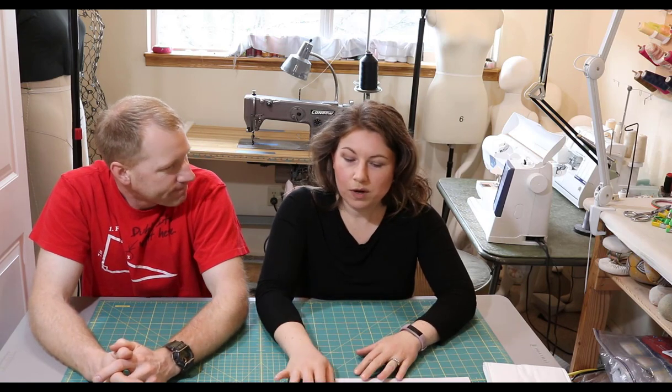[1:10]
Today we are going to work on a project where we make a dust mask or more. As you may know, currently there's a bit of a shortage and quite a demand for dust masks, maybe more than just a dust mask, the N95 or P100 type of mask. So whether you find yourself at home with a lot of extra time and you want to work on some cleaning or woodworking projects where a dust mask or a filtration mask would be good, or you happen to want to wear one out in public, we are going to show you our version of a mask made with rated filtration components.
Now keep in mind, this is at your own risk. There's no scientific testing behind this, but we're using components that should have good ratings. And you can use your discretion as to how you want to utilize these. At this point, I would say if you are using something with a filtration rating, it's going to be better than just a cotton knit t-shirt fabric. Yeah. But that's all we're saying, nothing else.
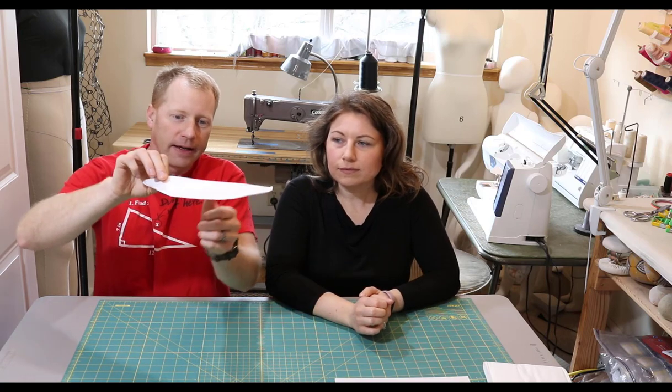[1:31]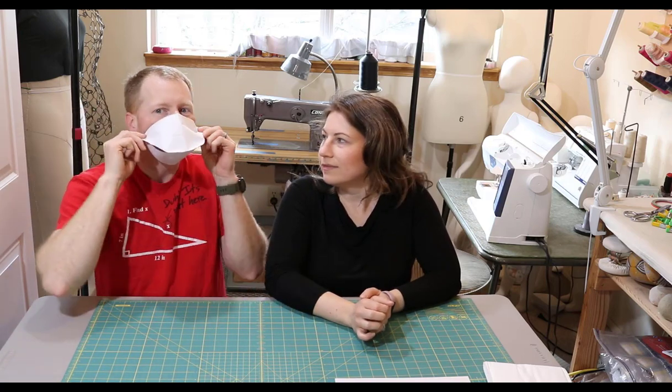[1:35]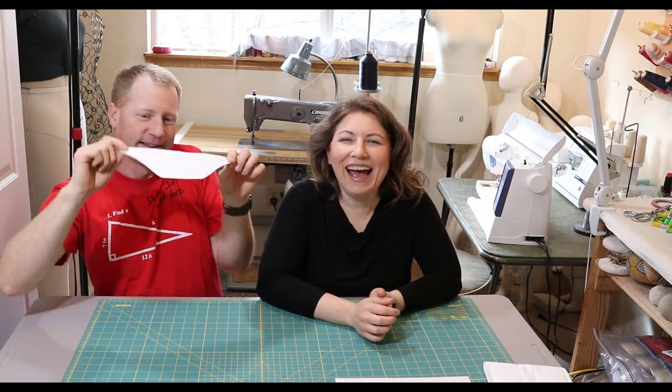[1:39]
Yep. This particular mask that we're doing is a duckbill style, so it lays flat, and then it opens up. We made a pattern out of paper, and it goes over your face like so. We're not going to be using that one when we make it, but that kind of gives you an idea of the style.
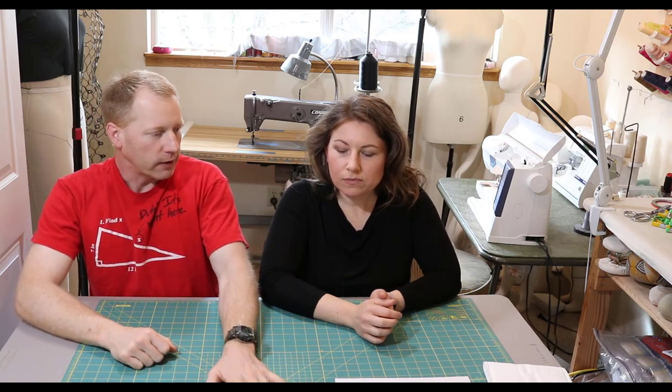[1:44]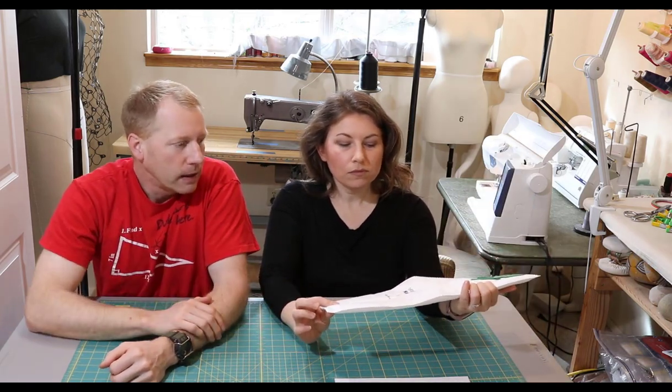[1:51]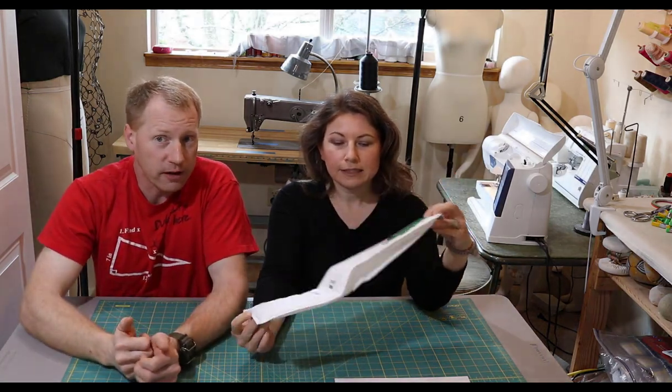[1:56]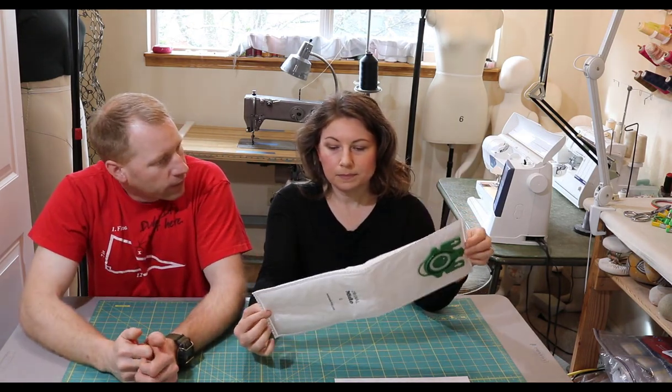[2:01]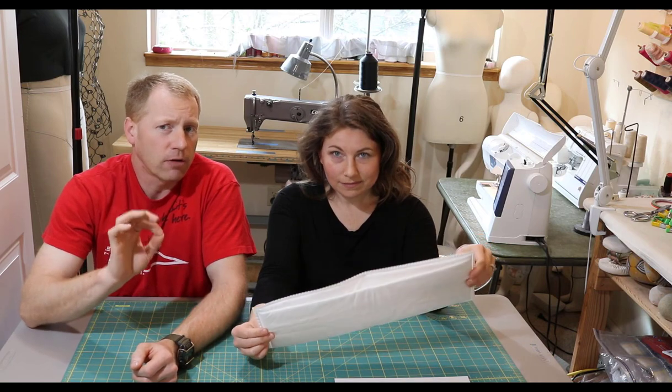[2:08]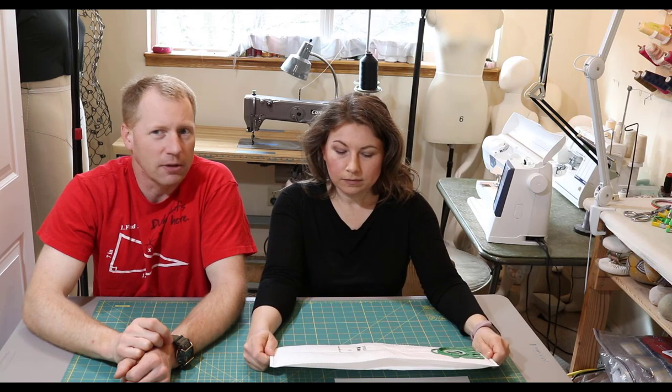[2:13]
We are going to actually use a vacuum cleaner bag, and these are HEPA rated. It's designed to keep particles from blowing out into your house when you use it as a vacuum cleaner, but it could also keep particles from going into your lungs when you breathe through it. These are rated at 99.9% dust particle containment. I couldn't find the actual micron size, but if it's a HEPA filter, it should be 99.97, I believe, is the rating. So that's the equivalent of a P100 mask that 3M puts out.
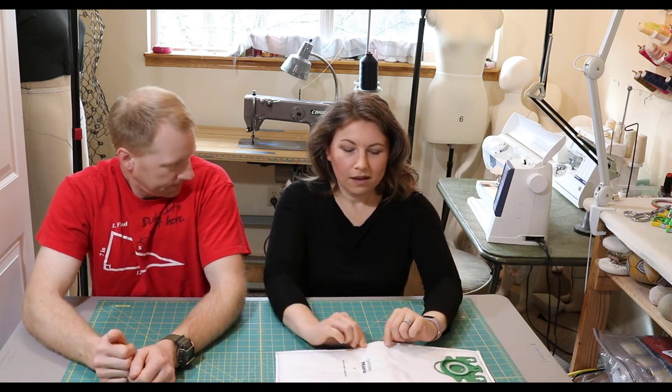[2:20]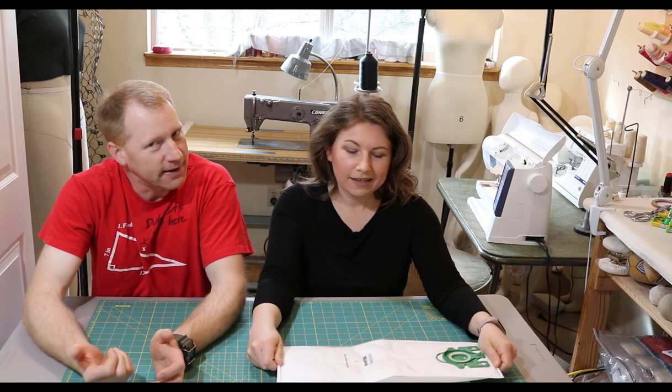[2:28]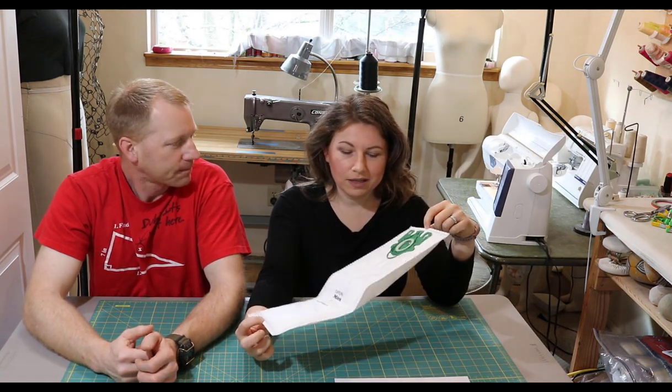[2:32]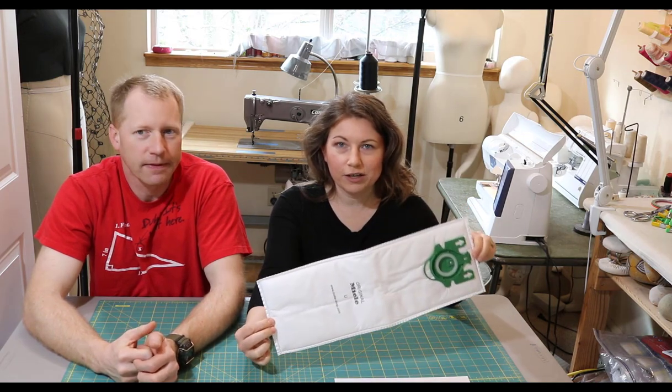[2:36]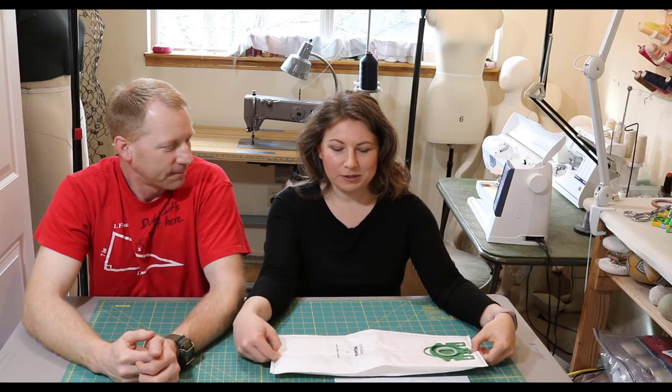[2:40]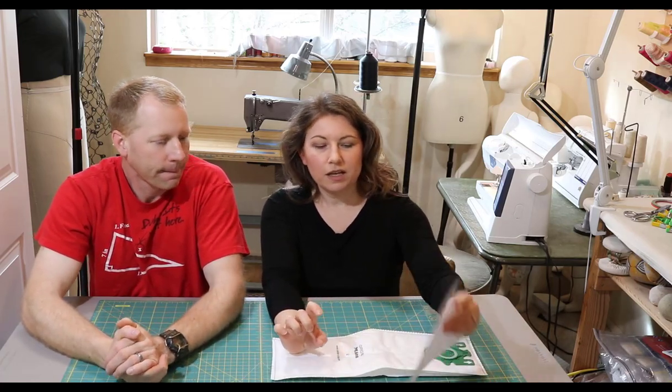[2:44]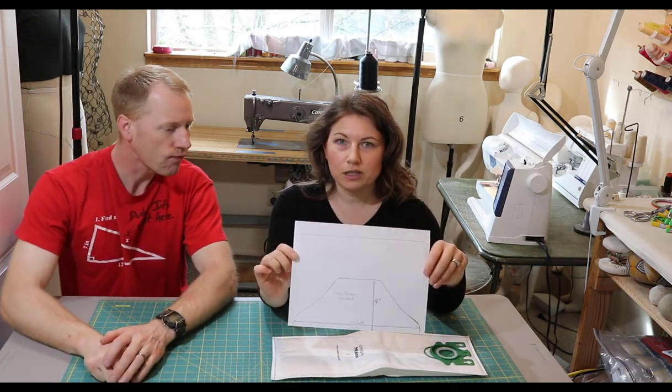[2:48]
And this is a, I'm going to pronounce it wrong, Miele? Yeah. So I believe this is a Miele HEPA filtration bag for cat and dog vacuum cleaners. So, allergy awareness there.
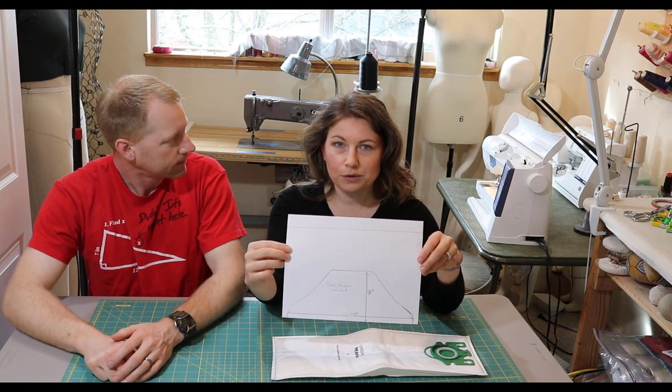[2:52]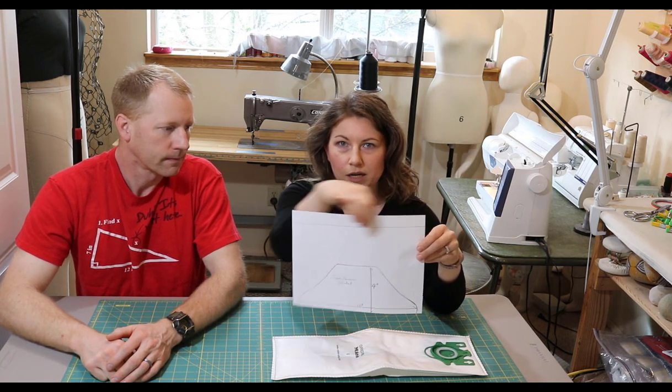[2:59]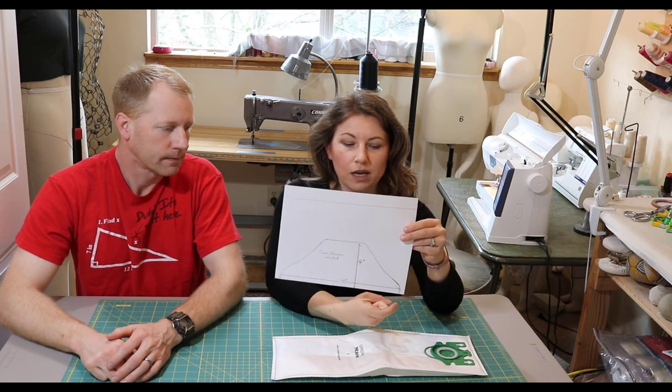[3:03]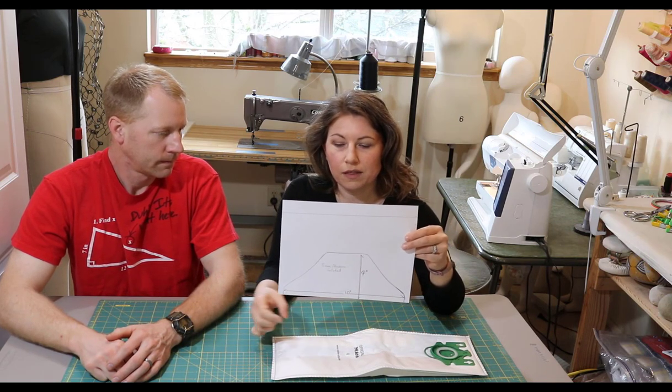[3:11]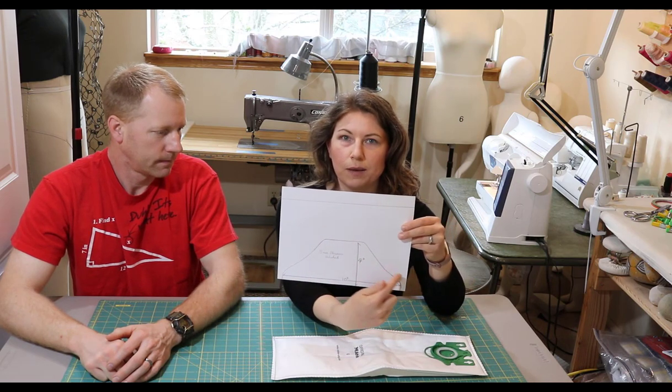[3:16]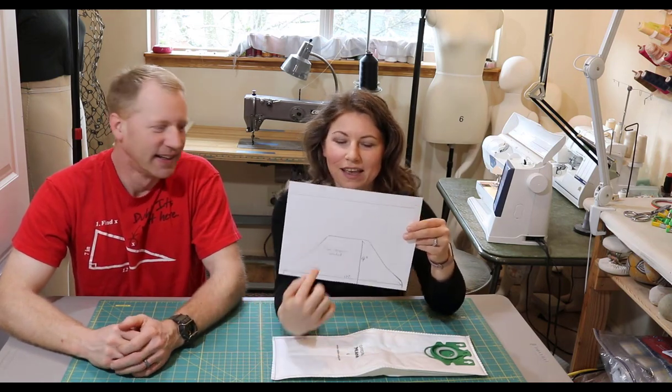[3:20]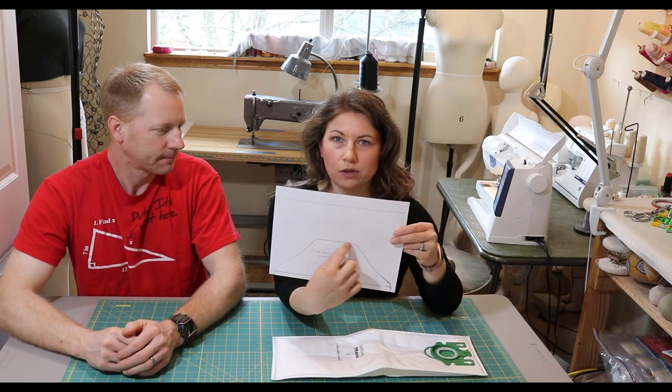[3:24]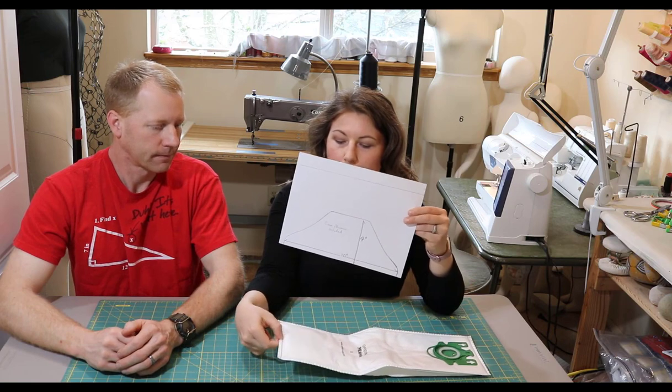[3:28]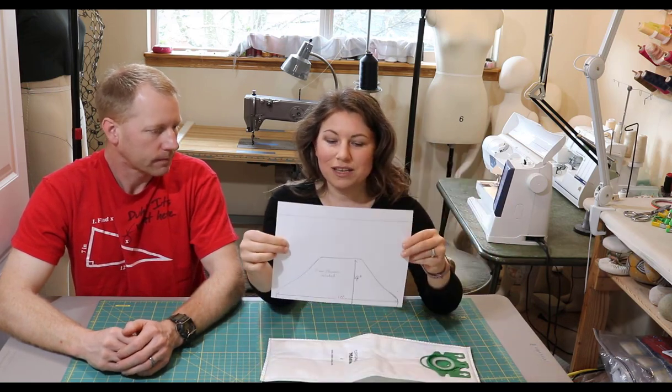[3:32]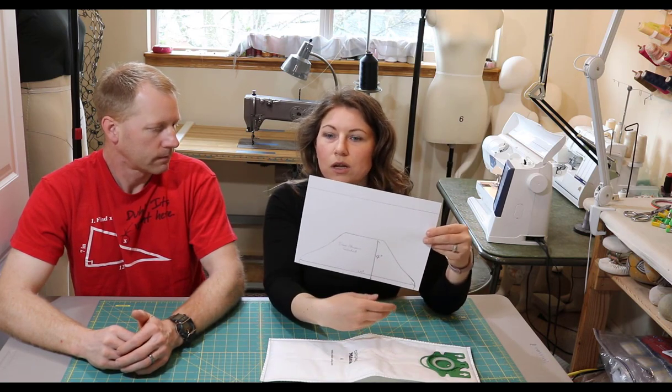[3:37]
And we have a pattern made from an 8.5 by 11 sheet of paper. So hopefully this makes it really easy for you to reproduce this shape. There's a 1-inch strip at the top. Just mark it. That's for your elastic. And then if you mark a little notch on either side of your paper at a 10-inch distance, one side to the other, and then 4 inches up, and then create this kind of shape, kind of like a mountain. The top is right at about 3 inches straight across, so that's where you will affix your heat-welded section. That just gives you an idea, and these include the seam allowance, so you shouldn't have to worry about that.
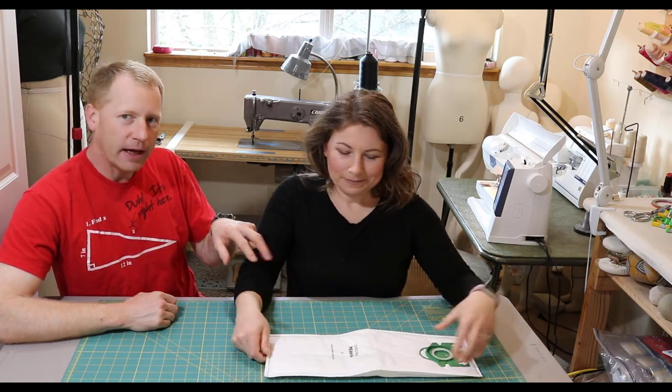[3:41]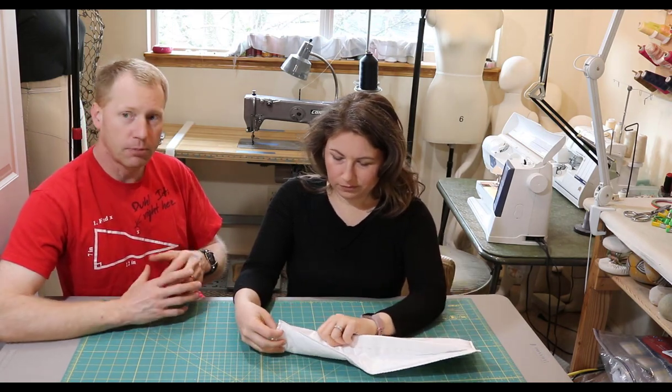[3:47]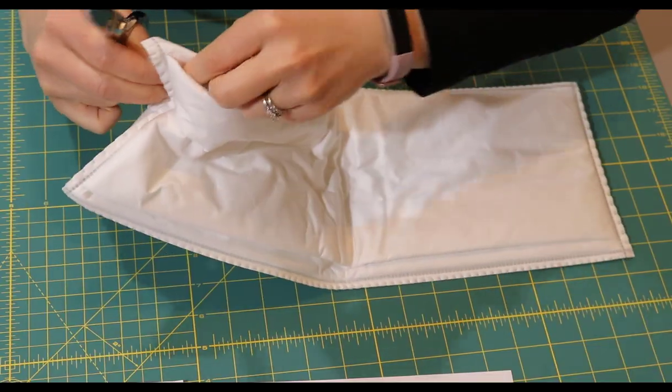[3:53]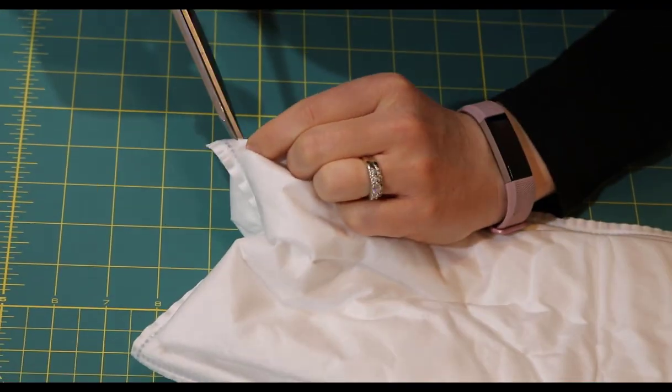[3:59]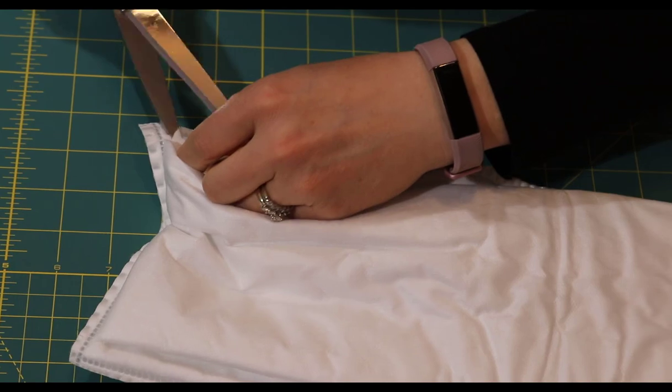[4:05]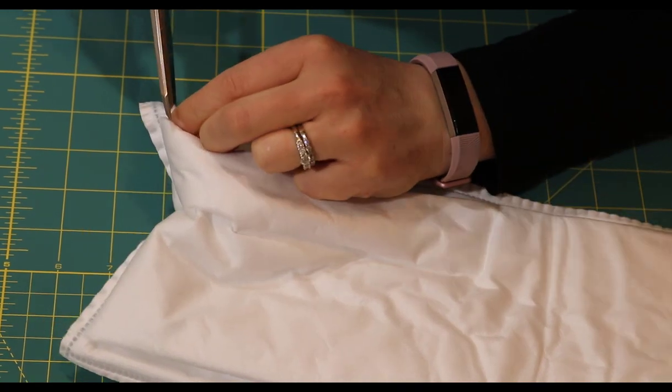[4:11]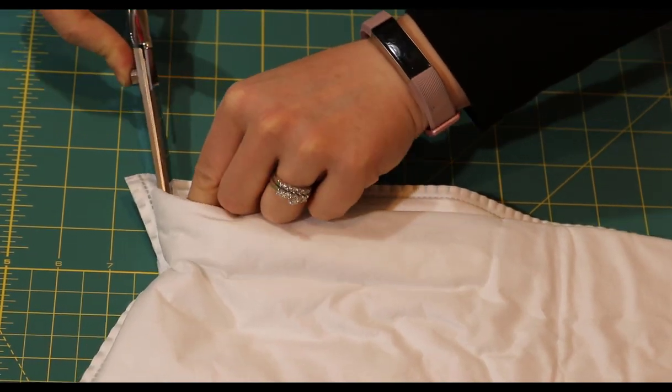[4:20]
So we'll dissect this bag. We'll utilize as much material as we can. Different bags, different manufacturers are going to be put together differently, so just keep that in mind as you chop it apart. I am separating the top and the bottom sections, putting a little snip here just to open it up, and then once I have made an incision into the bag, I'm going to carefully cut this pleat out.
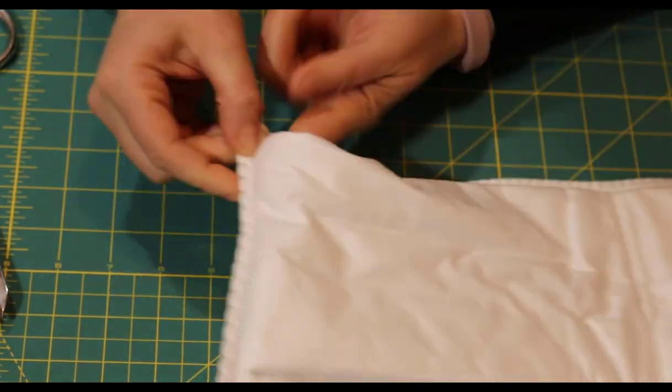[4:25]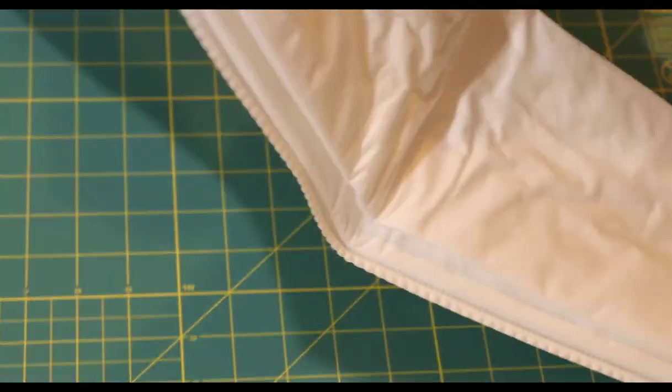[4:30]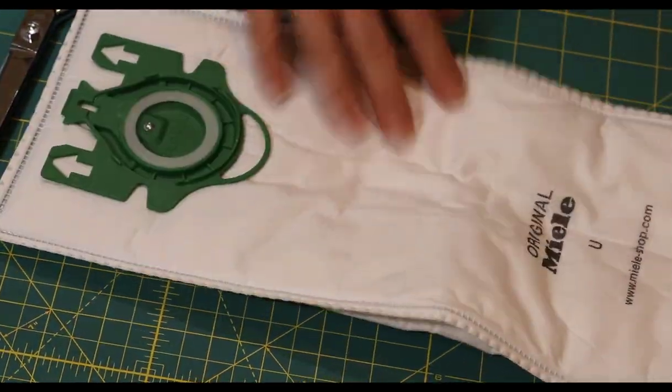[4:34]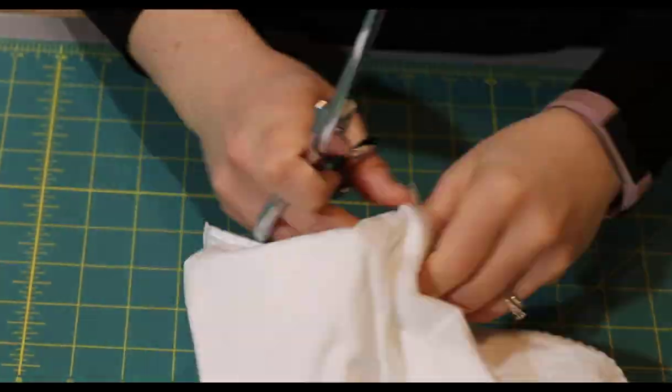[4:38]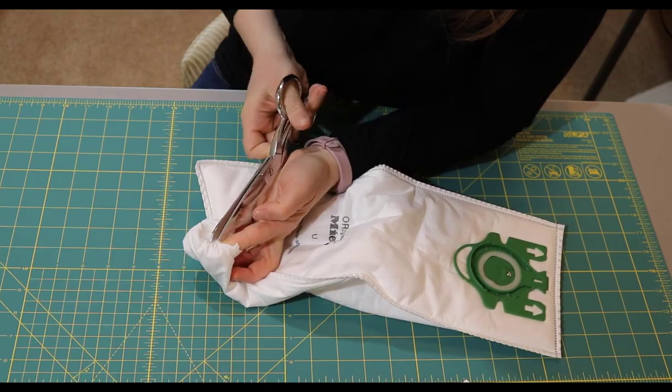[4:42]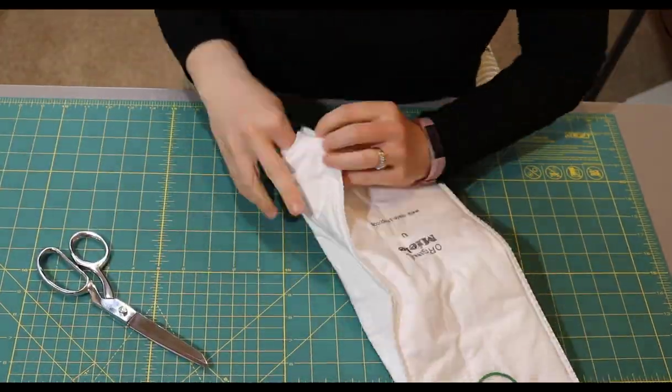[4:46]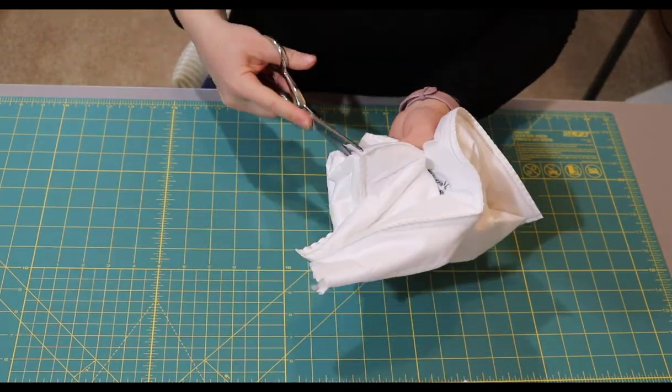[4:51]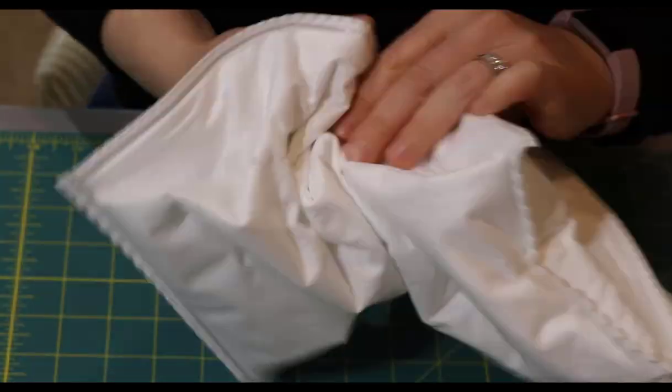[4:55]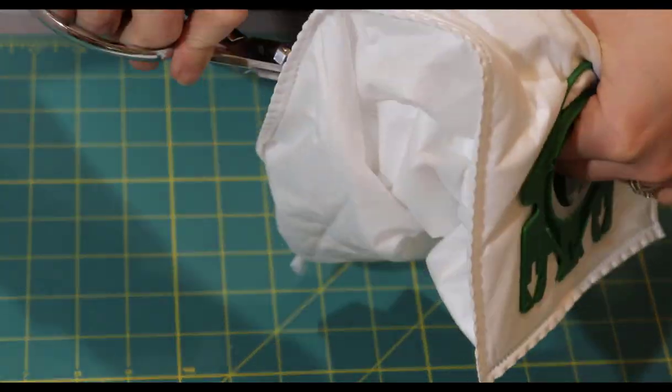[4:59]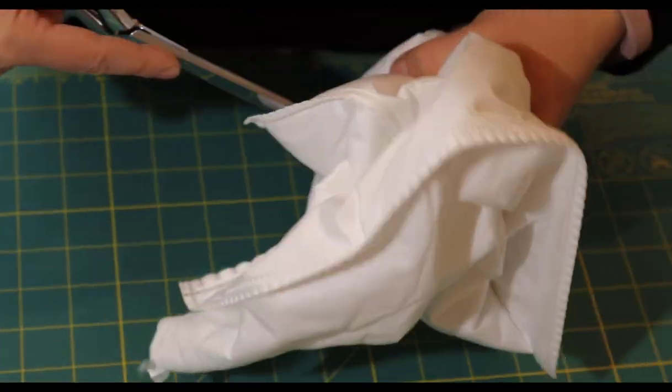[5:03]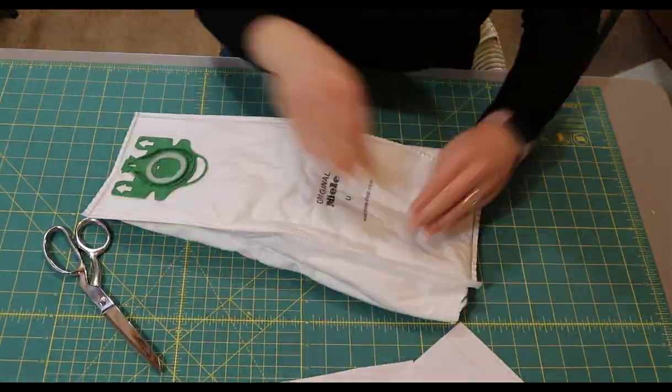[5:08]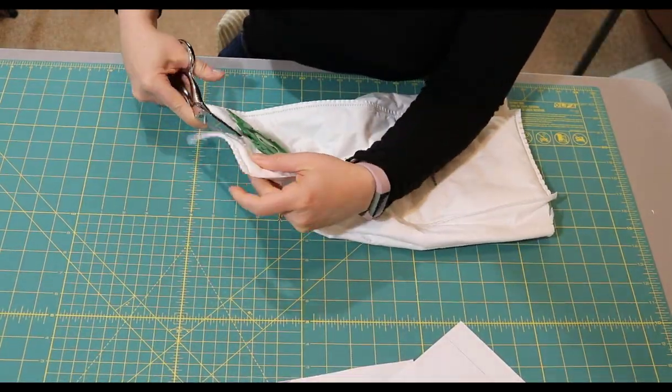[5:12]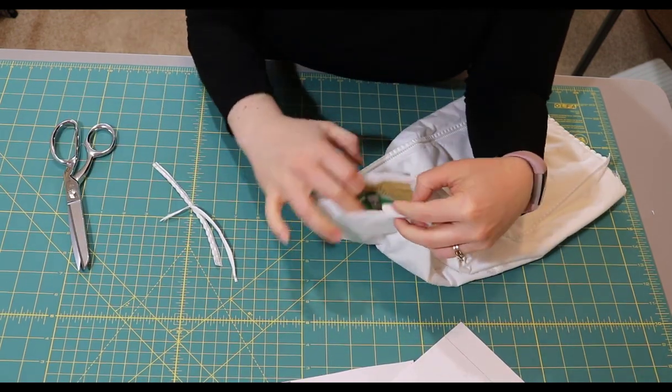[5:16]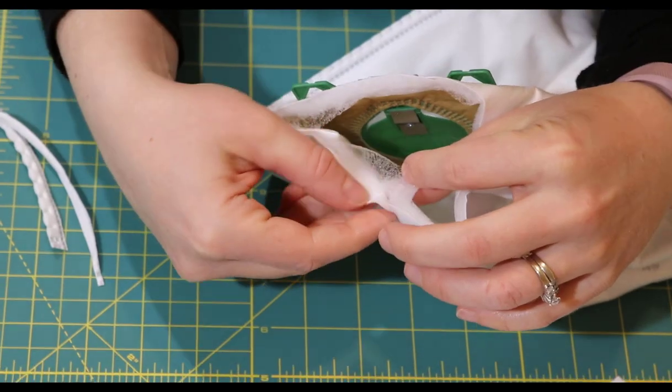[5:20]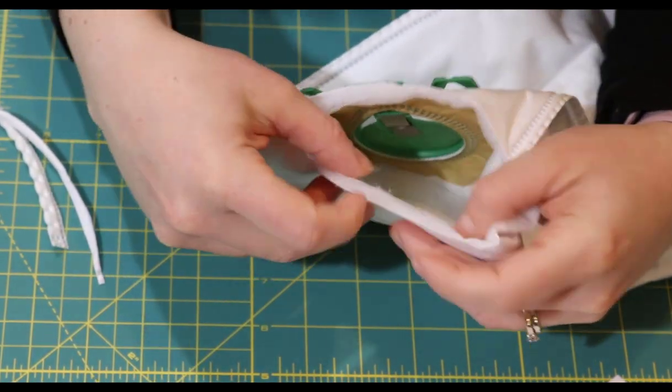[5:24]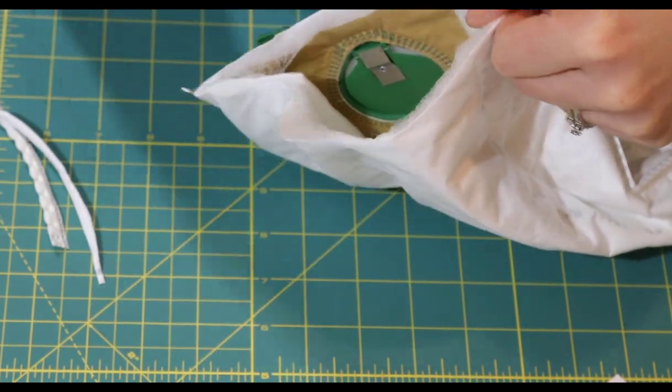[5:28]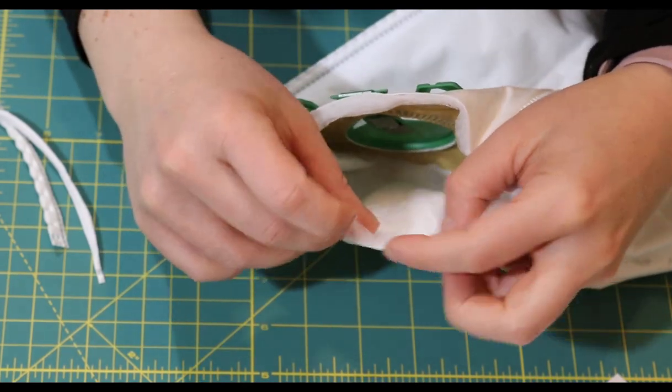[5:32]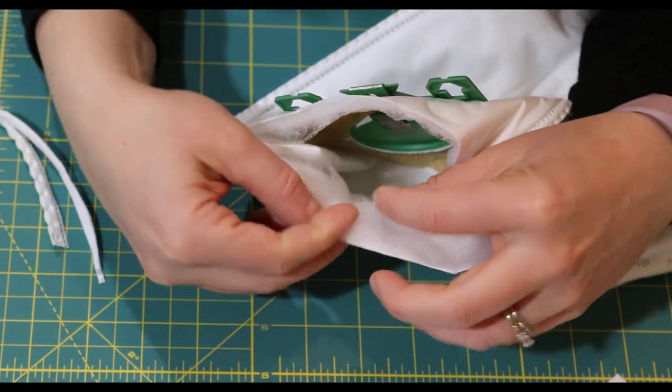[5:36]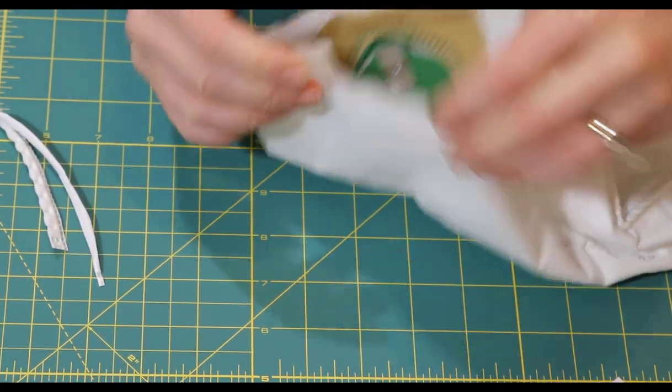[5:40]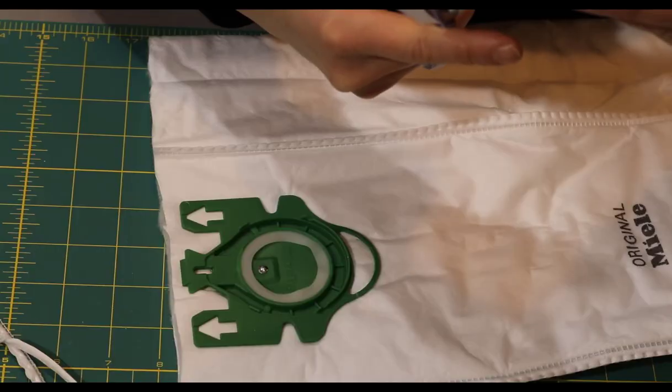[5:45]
If you look inside, there's a lot of what looks like fluff for a pillow or quilting fabric. And then there's this really fine layer. It feels kind of like interfacing right here. And then the outside part feels a lot like those bags you get at conferences.
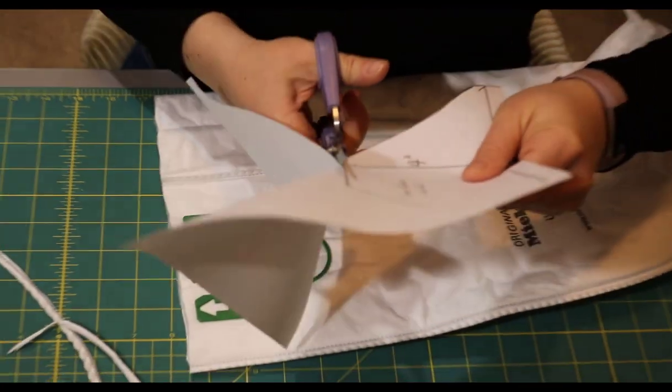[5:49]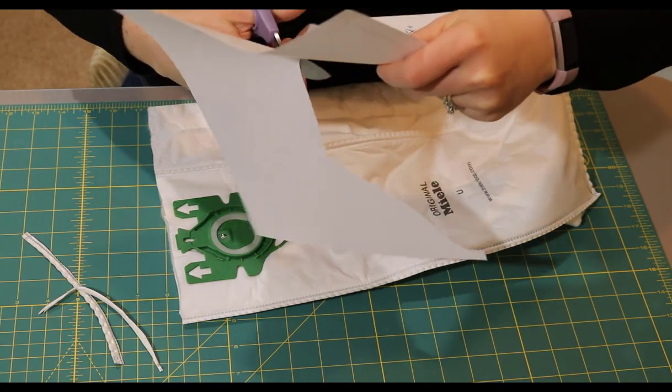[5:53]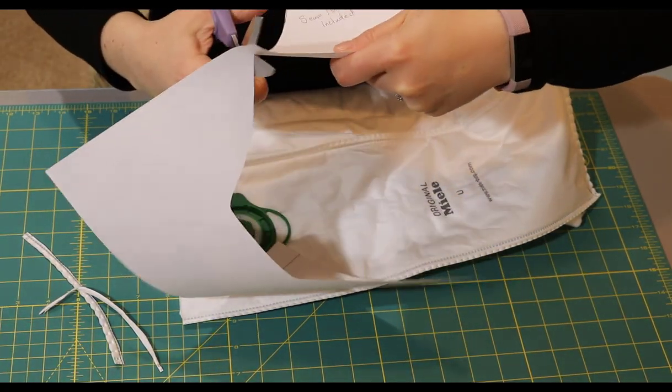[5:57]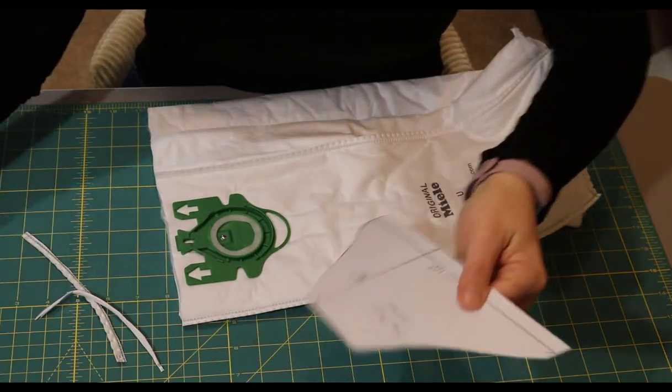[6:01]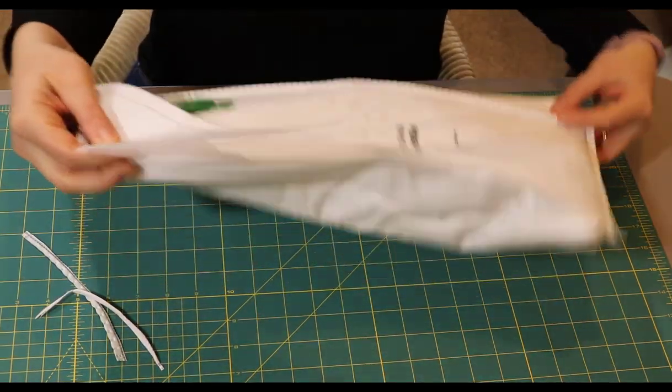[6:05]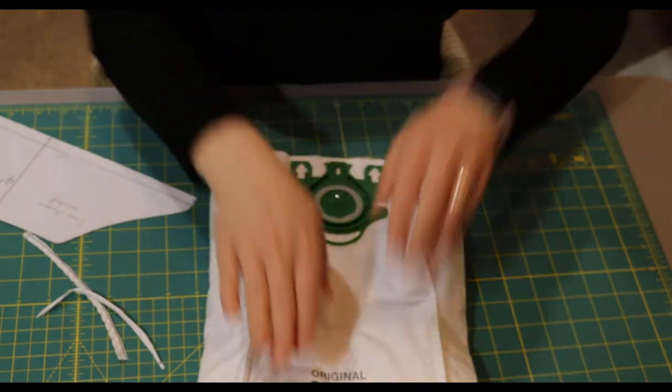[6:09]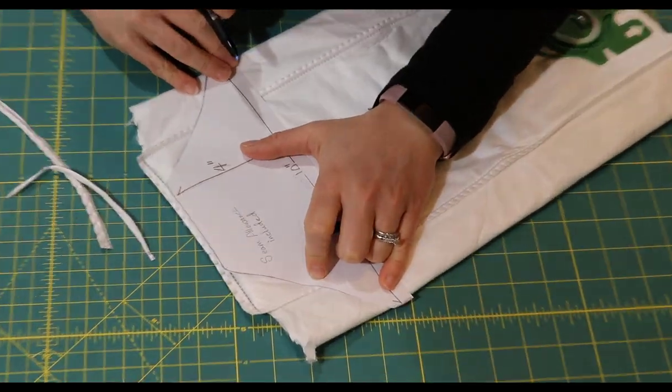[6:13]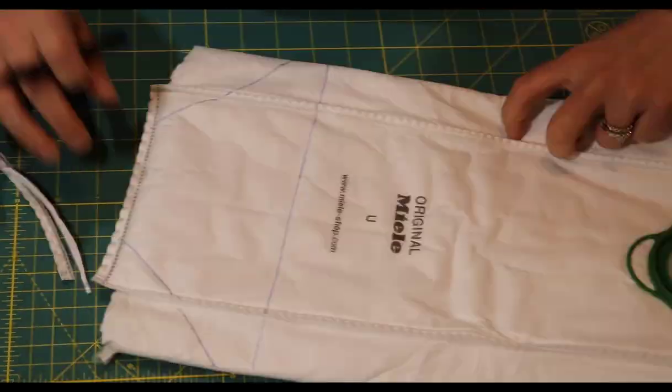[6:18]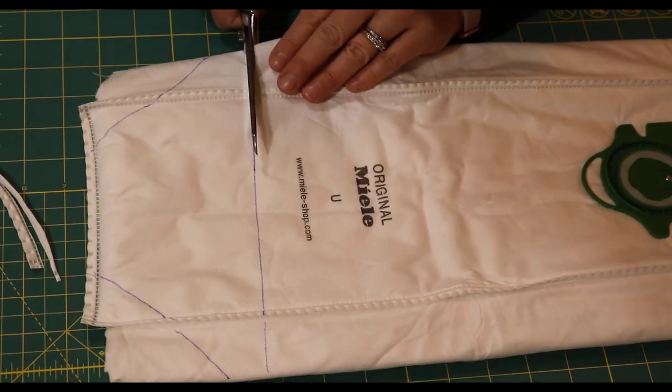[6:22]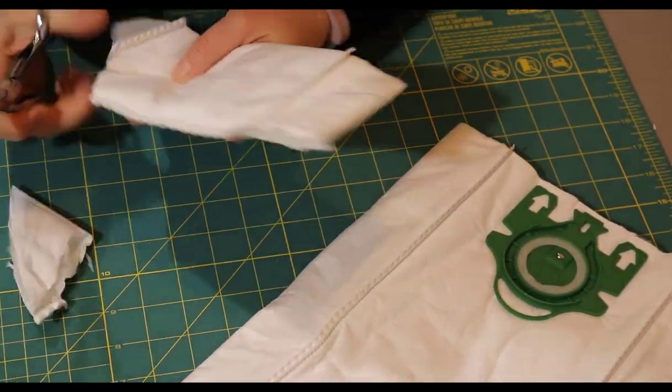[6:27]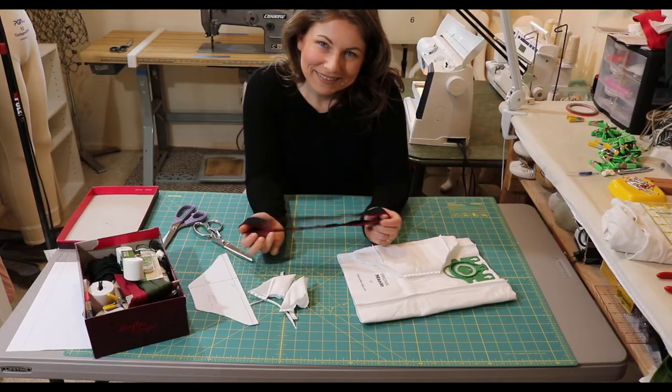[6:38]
So for now, let's just do the one, but you could certainly try and fit more on here. We're going to just mark this. Go ahead and cut it out. It looks like a diaper. It looks like a small diaper. A diaper for your face.
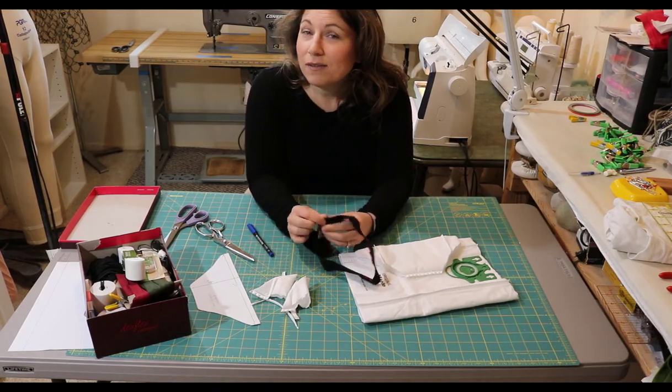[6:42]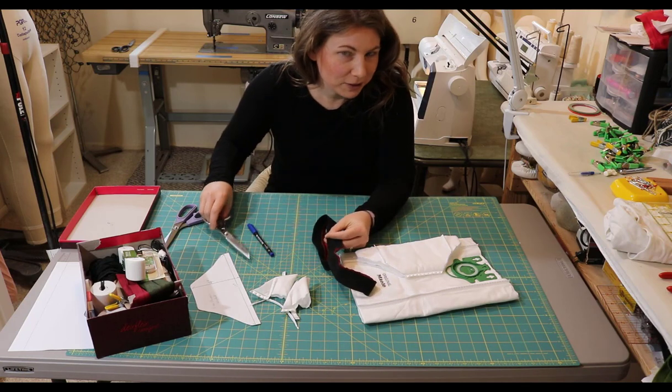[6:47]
Everybody has that pair of underwear that they'd rather not know that they still have in the drawer. So we're getting rid of that pair of underwear.
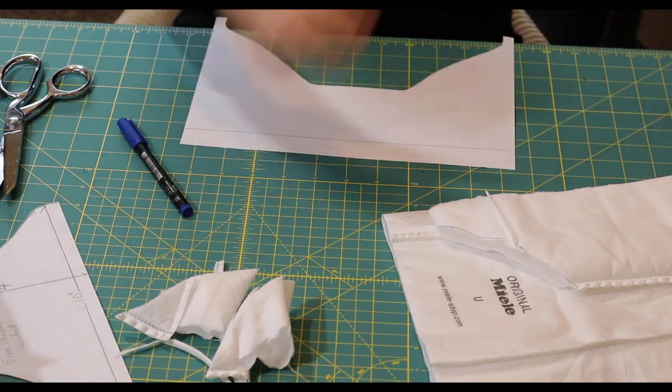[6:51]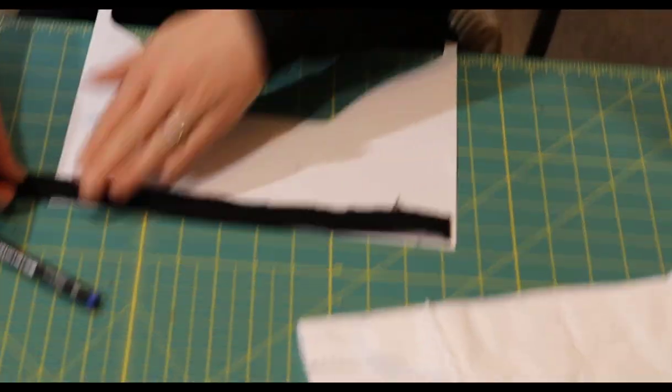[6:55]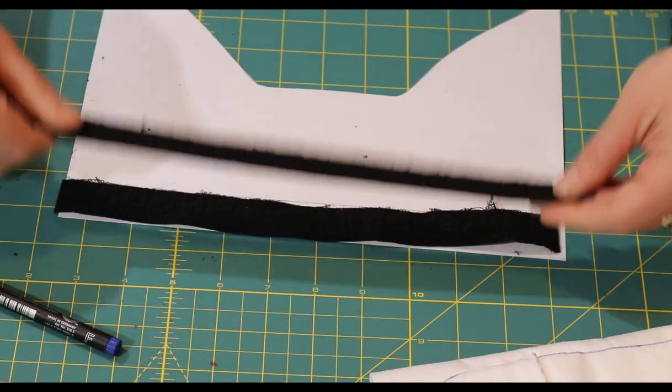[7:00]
Grab your pattern and cut two pieces that are 11 inches long.
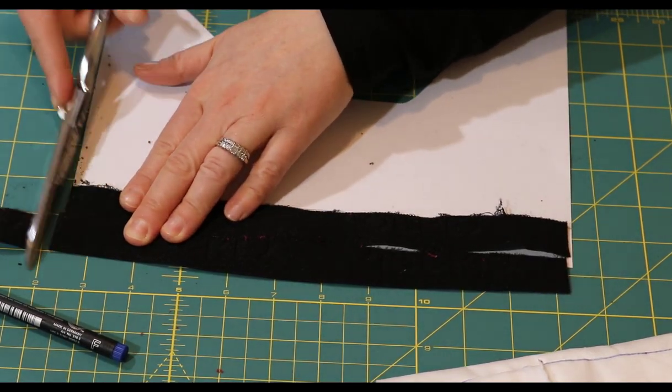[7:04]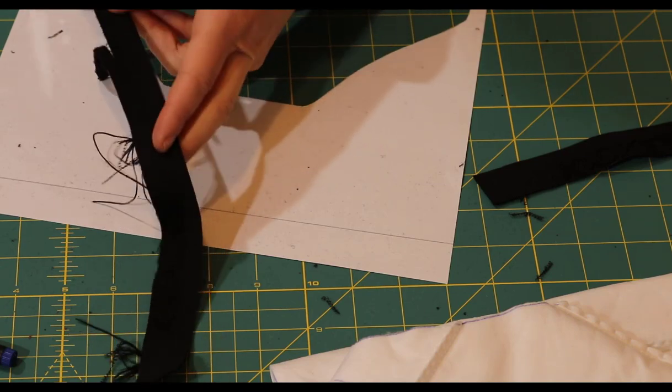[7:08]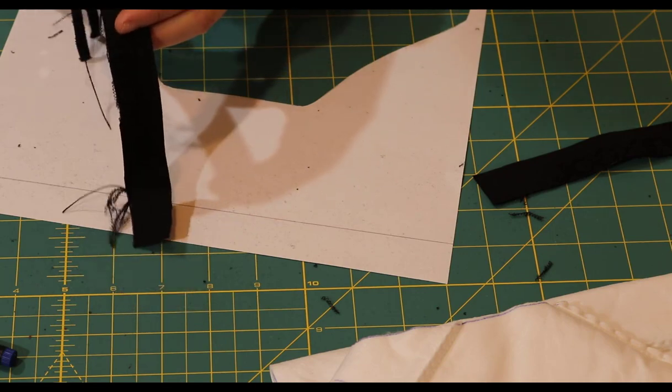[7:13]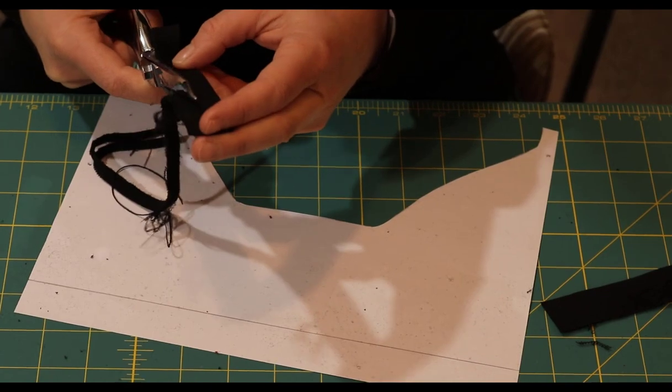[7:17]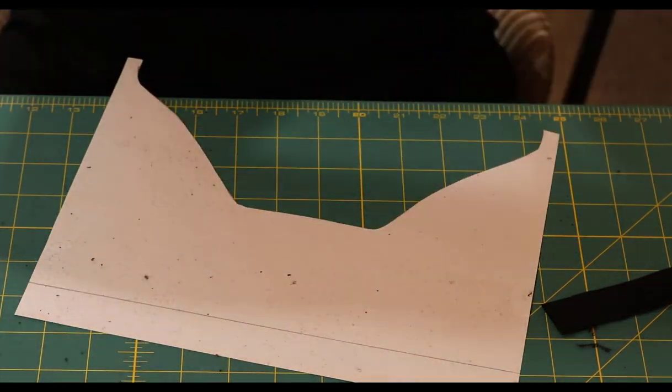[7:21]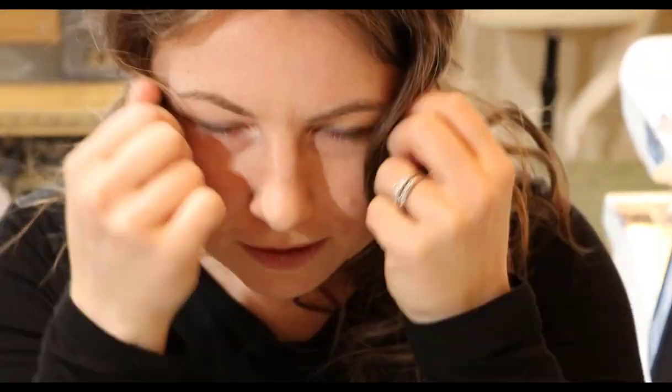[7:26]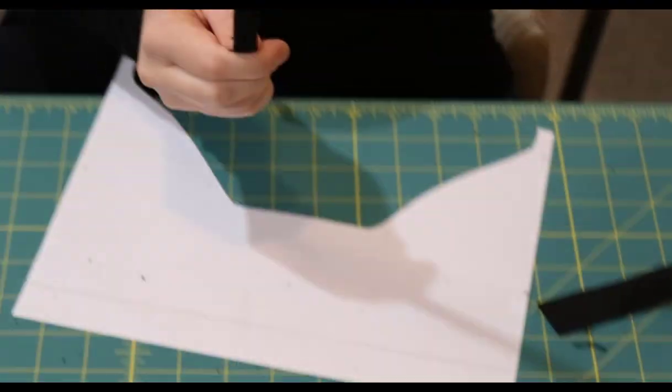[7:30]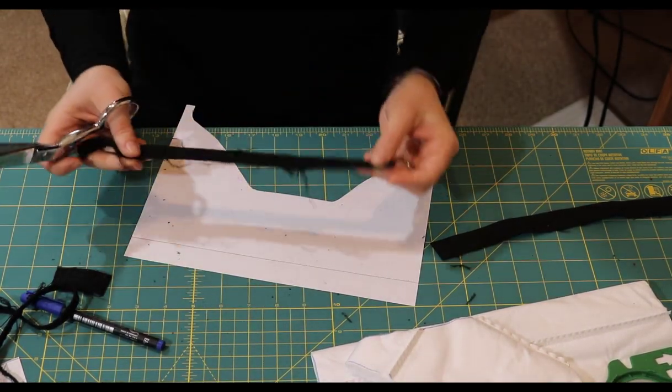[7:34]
This is going to crush somebody's head if it's that thick. You're going to have a headache after like 15 minutes. I tried it for a second. You're right. Okay, let's try this again. That feels a little more... This is why you want to cut them.
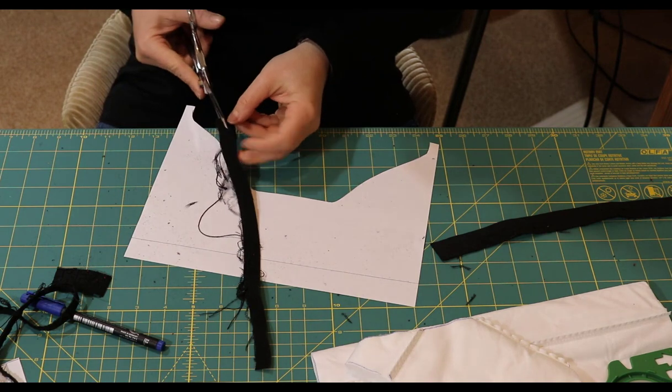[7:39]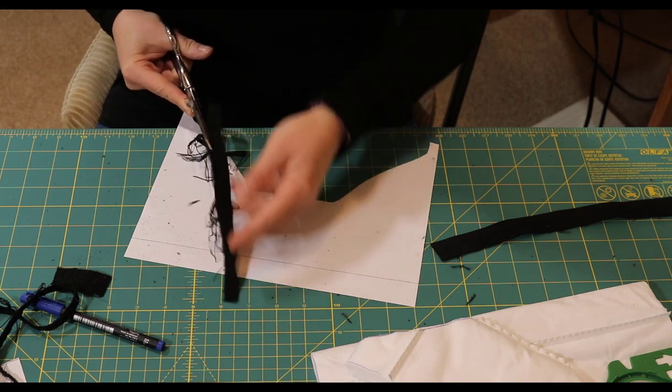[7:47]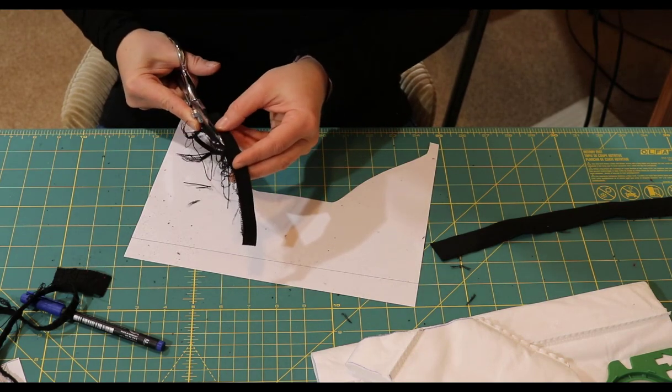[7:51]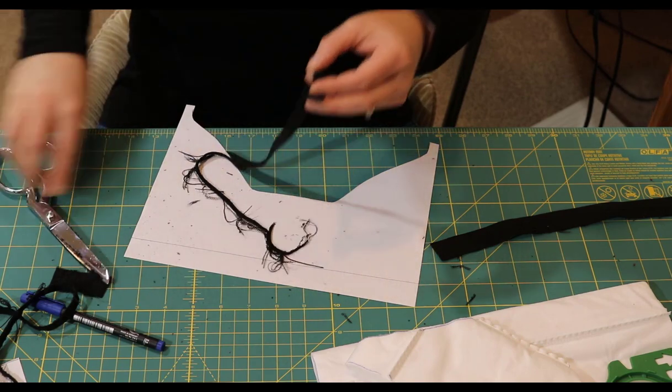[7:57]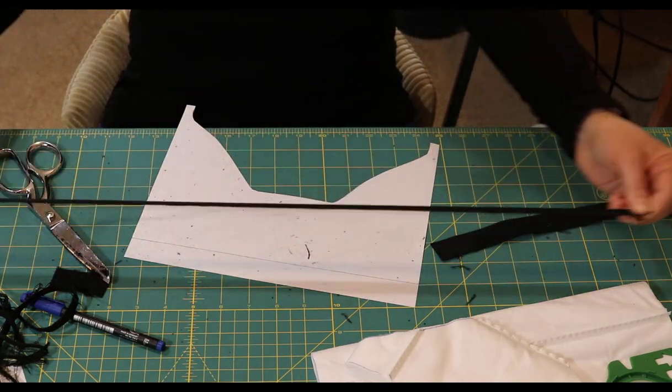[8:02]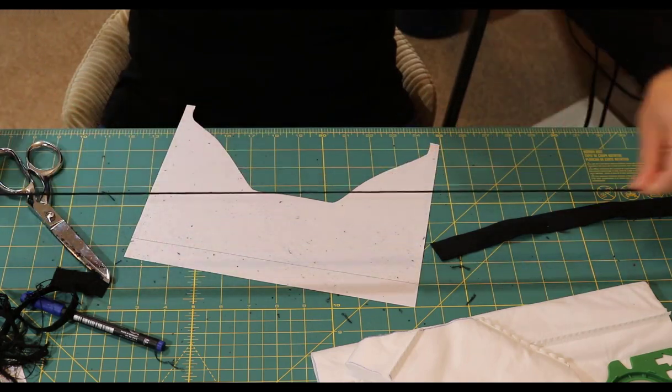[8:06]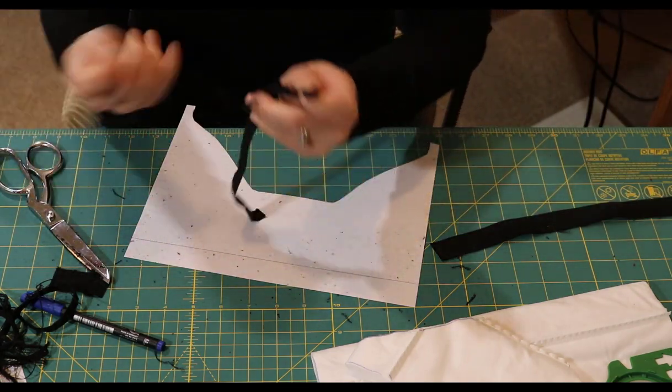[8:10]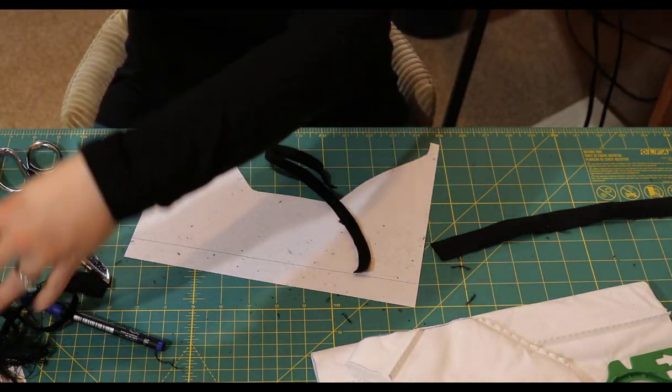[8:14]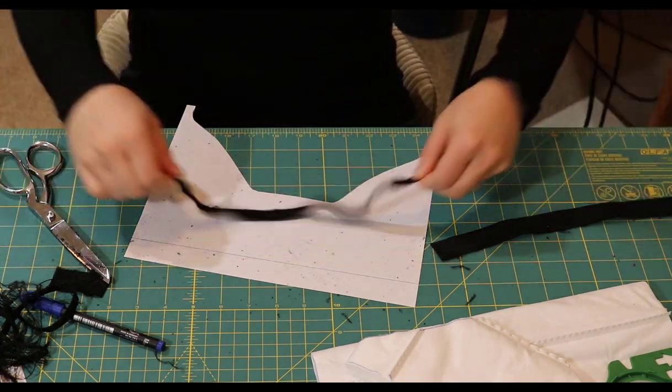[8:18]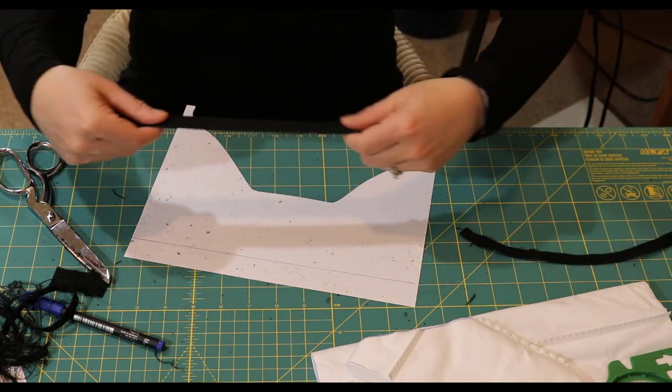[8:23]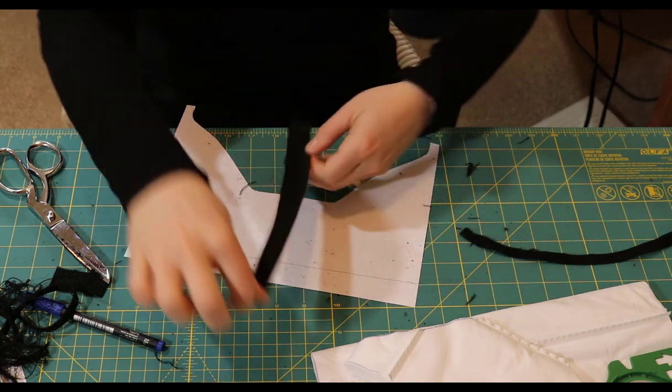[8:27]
Yeah, this is the part that they don't show you in the videos online. When you cut elastic down the center and then you try and pull on it, it pops apart. Okay, get rid of all the extra little pieces. So that seems a little more reasonable. Just be aware that if you slice elastic down the center, you're going to get a lot of floofy stuff that just pops right off. Okay.
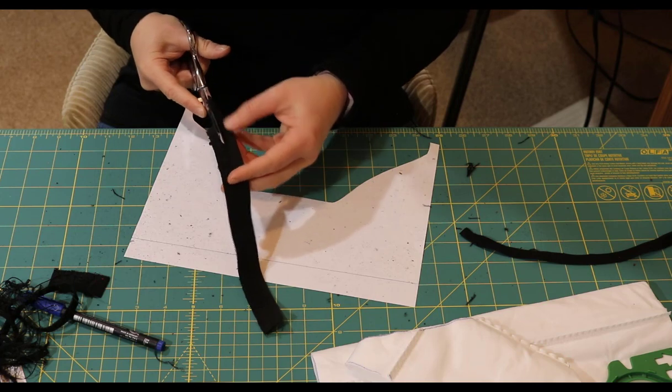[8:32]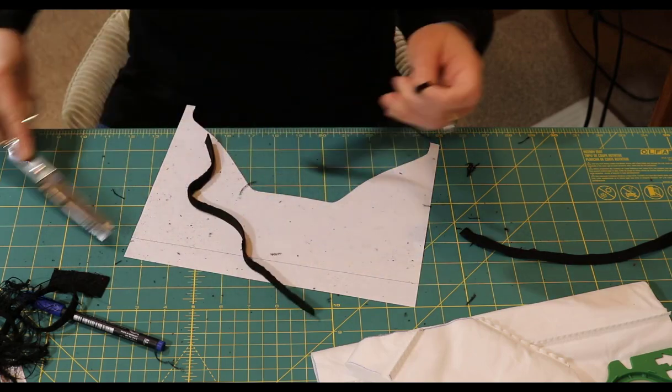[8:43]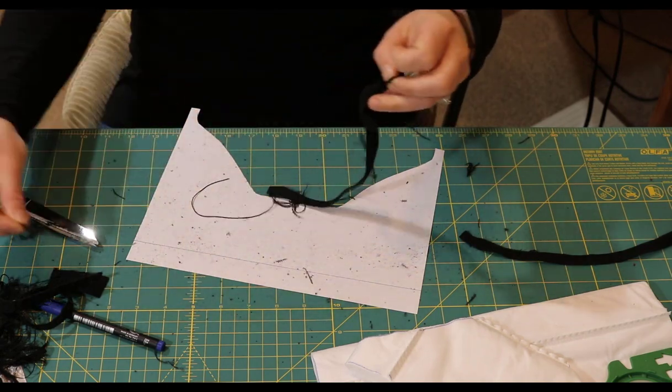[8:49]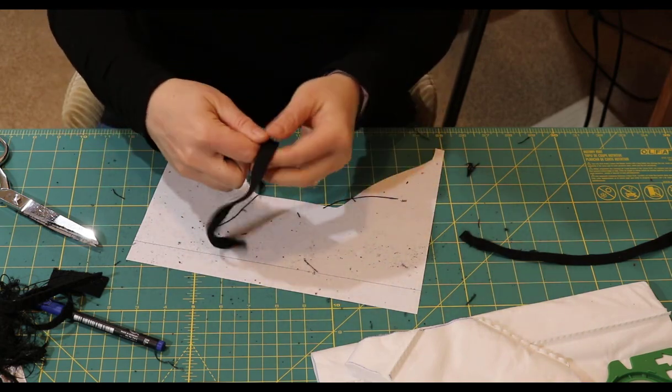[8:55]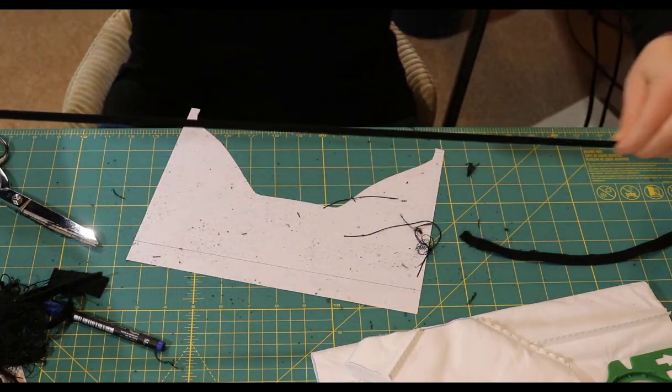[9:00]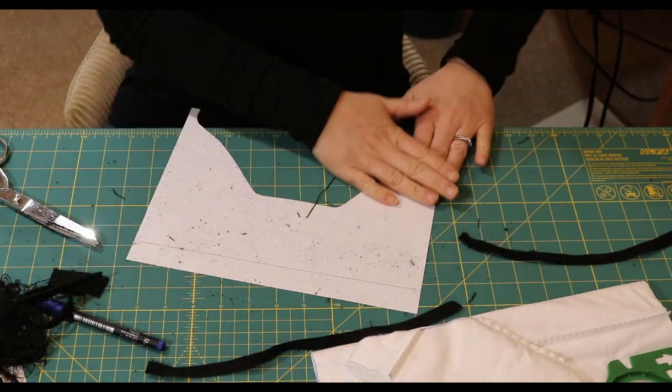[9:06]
So these look like they need to be just slightly over a quarter inch, or they're going to be too heavy duty and give you a headache while you're wearing your mask. I would say don't try this at home, we're professionals, but... Alright, now I think we're... there's another one. Okay, now I think we're even. Yep, okay. Next time you do this, wear a mask so you don't breathe all the fuzz in.
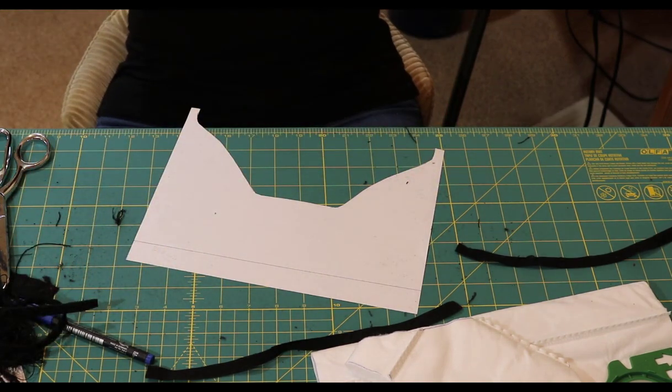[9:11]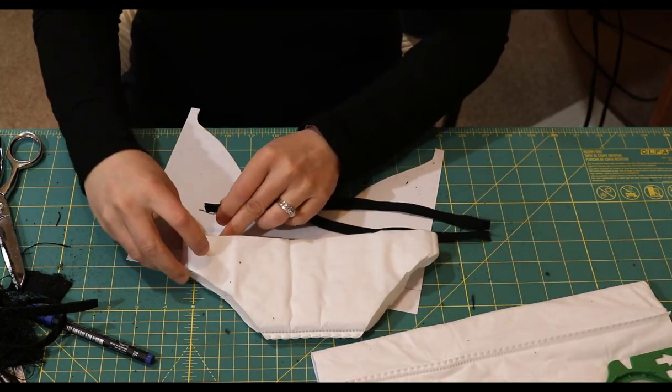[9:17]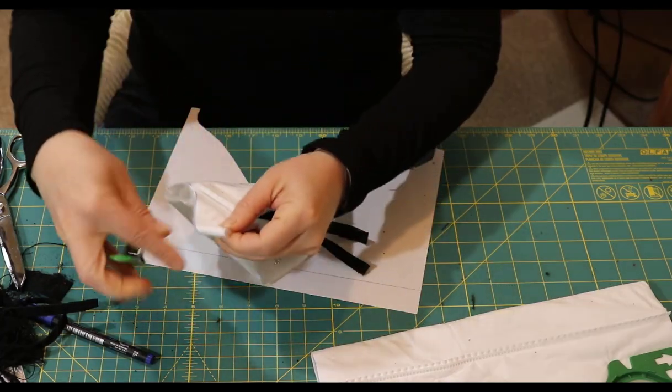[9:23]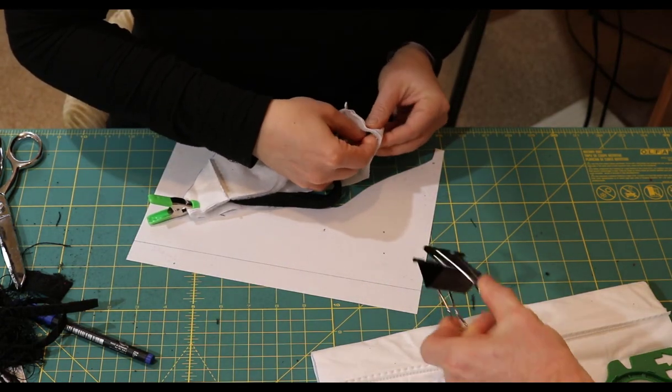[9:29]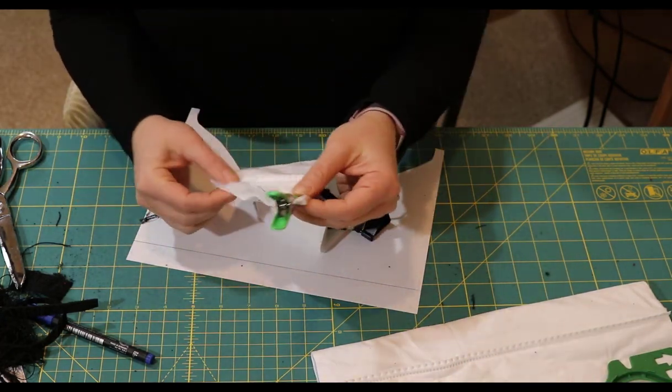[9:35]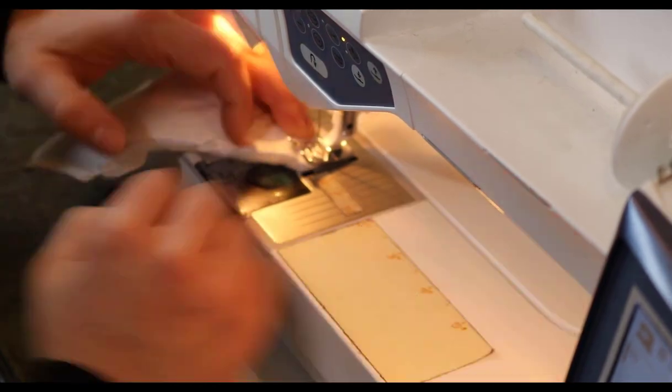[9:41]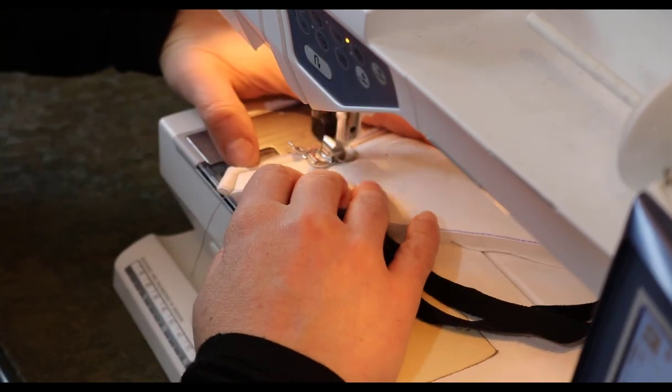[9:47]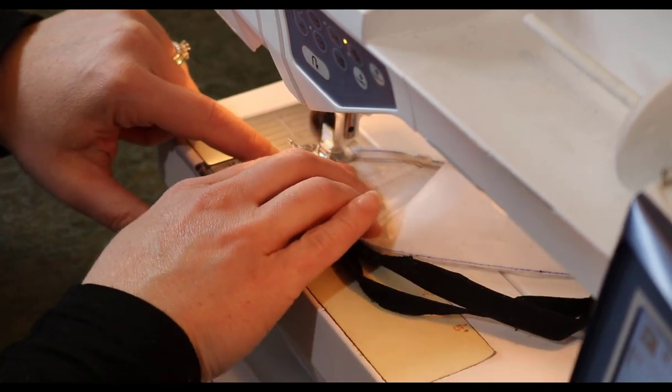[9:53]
Okay, now take both of these and put them in the fold there. Go ahead and use a clip if you have one. You could also use this. We're gonna go ahead and sew these now. The less you puncture it, the better, so that's why we're using clips, not pins. So I'm just going back without snipping my threads, just retracing just a little bit further in.
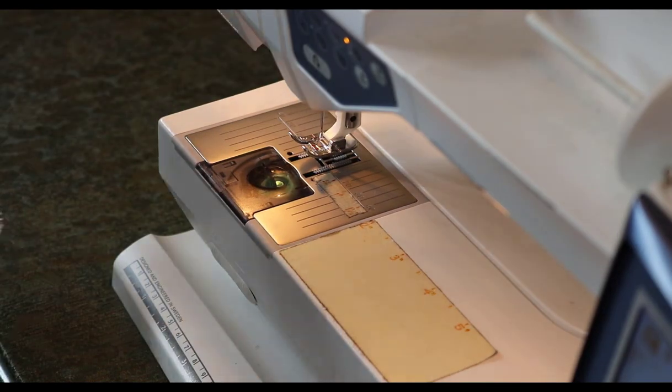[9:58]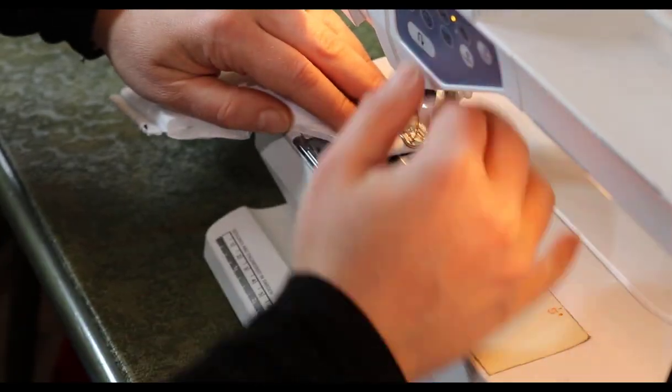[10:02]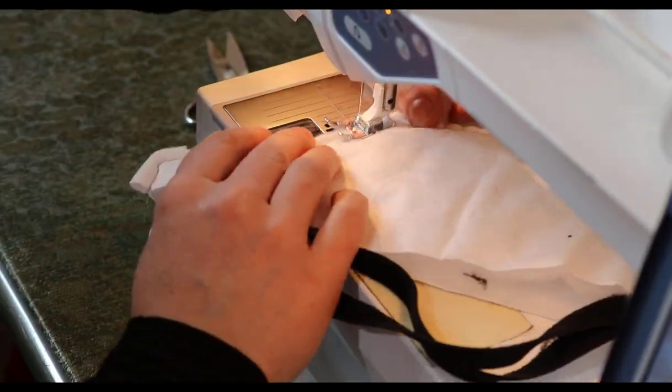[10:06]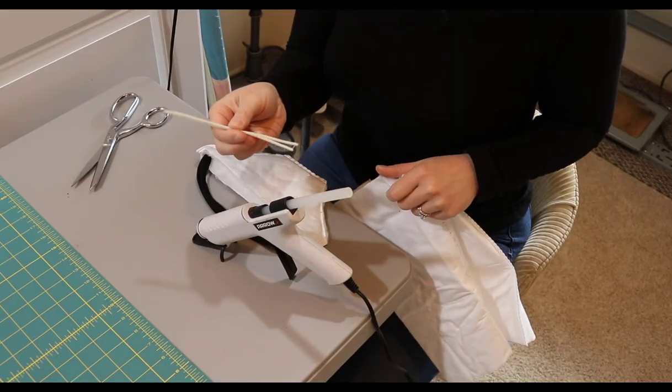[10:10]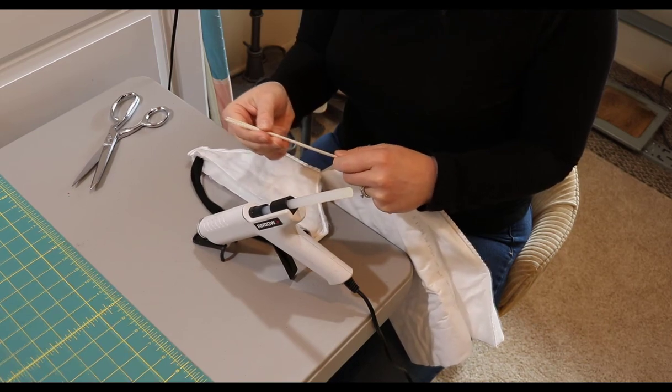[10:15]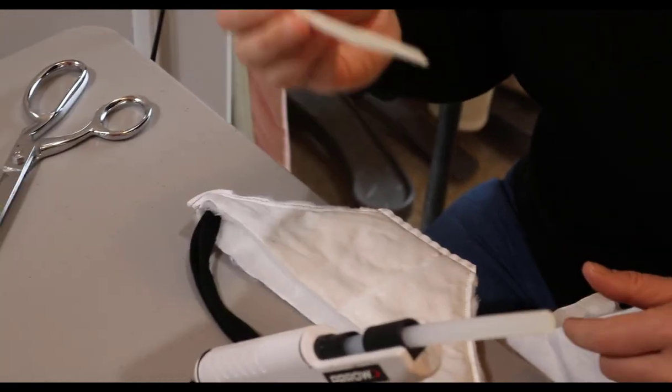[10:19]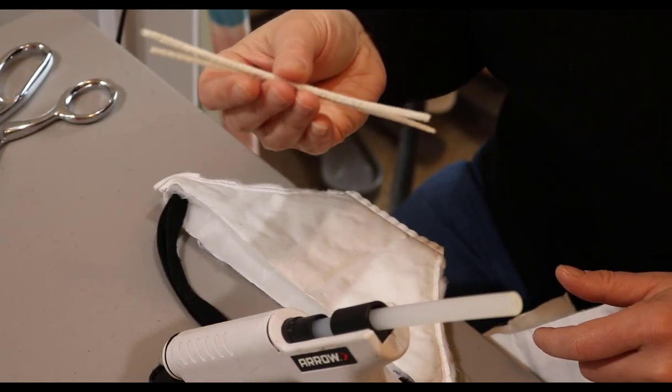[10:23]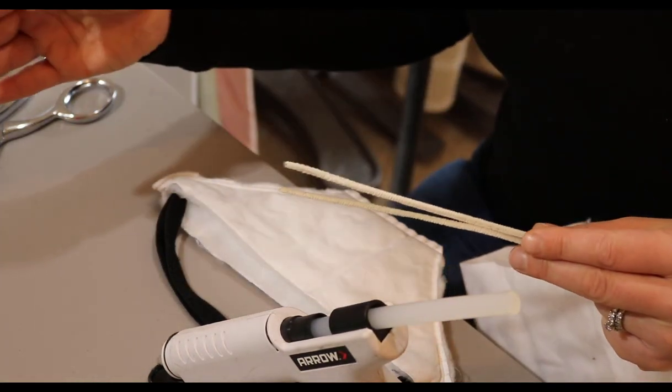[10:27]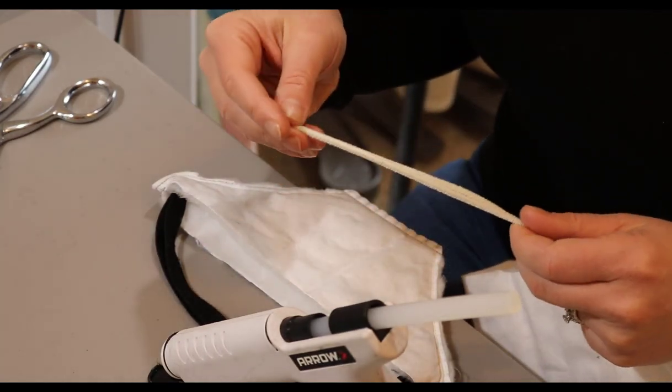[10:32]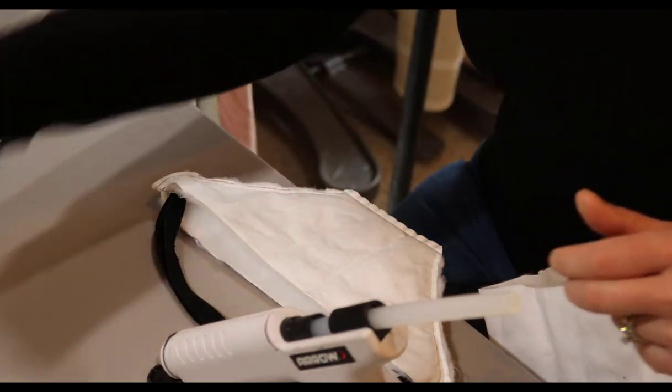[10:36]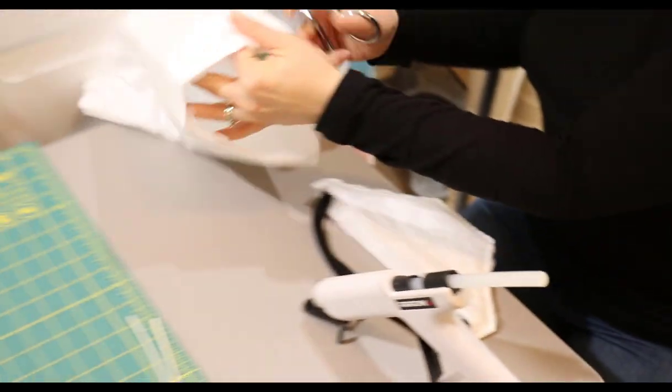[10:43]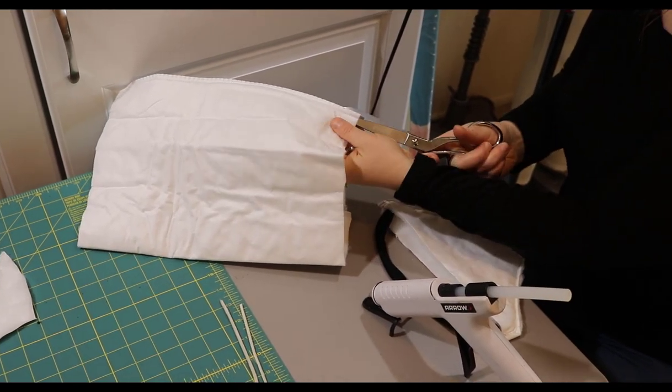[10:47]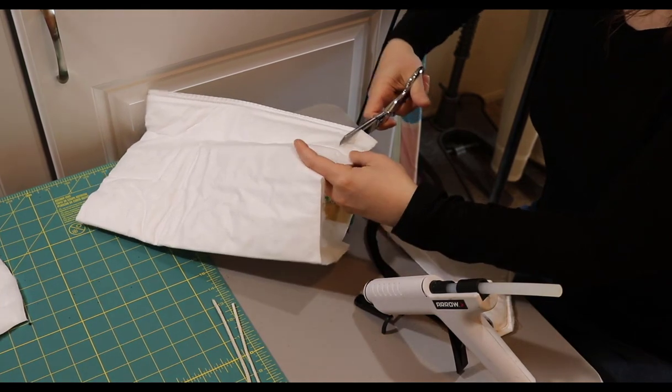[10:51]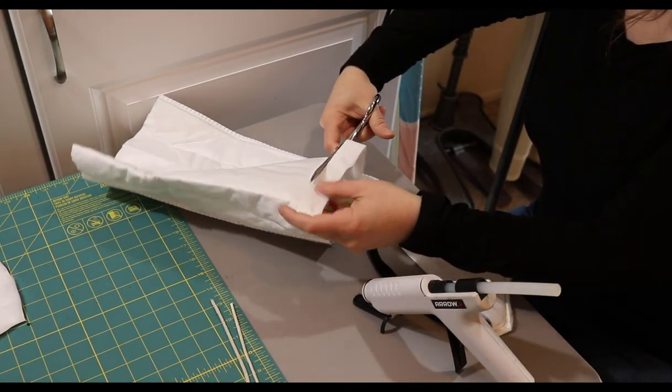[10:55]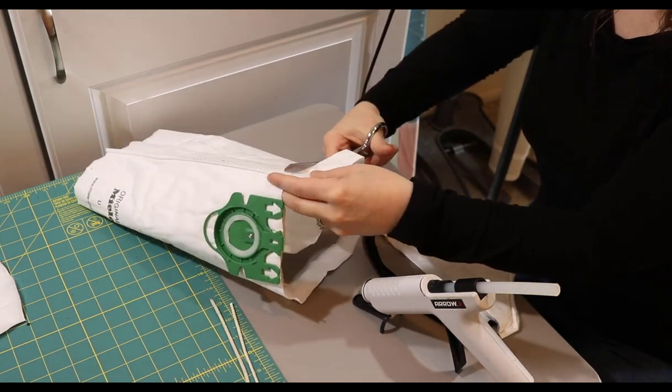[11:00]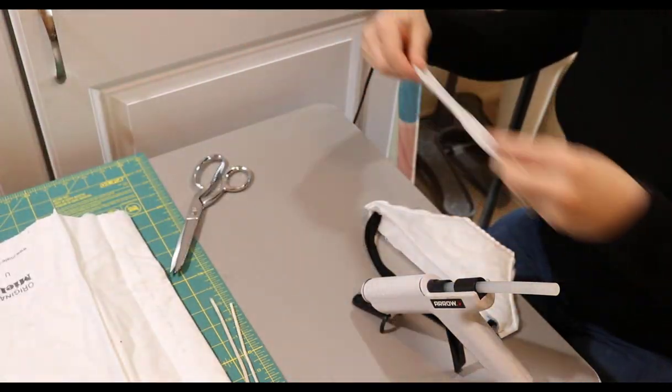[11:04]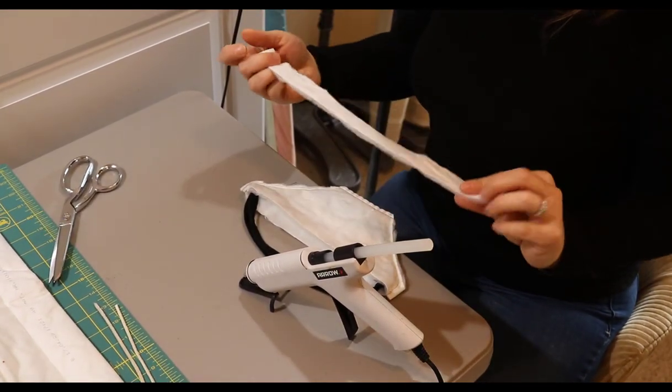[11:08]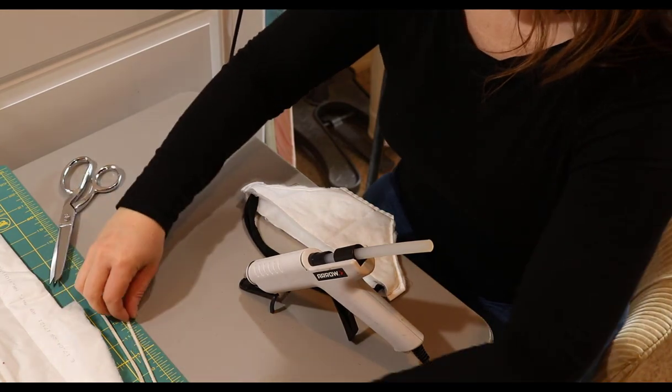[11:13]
These are real pipe cleaners that Dan has for whatever pipe cleaning needs to be done. But some of you might have the craft pipe cleaner, which comes in strips that are about a foot long. And so you just fold one of those in half so you have enough strength to shape it to your nose. And I'm going to use a chunk of the vacuum cleaner bag to cover up the pipe cleaner once it's been glued onto the mask. So I want to fully encase it with this stuff. So I'll just trim it to length later.
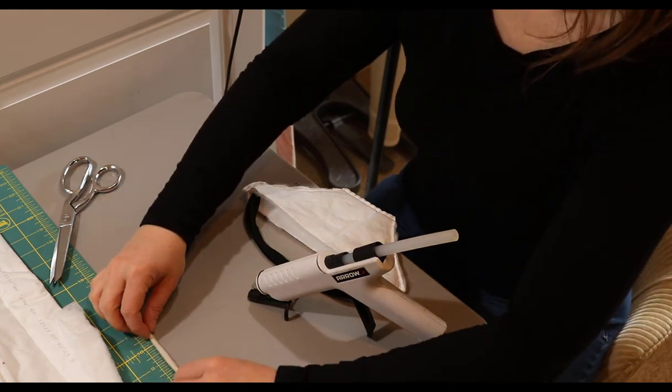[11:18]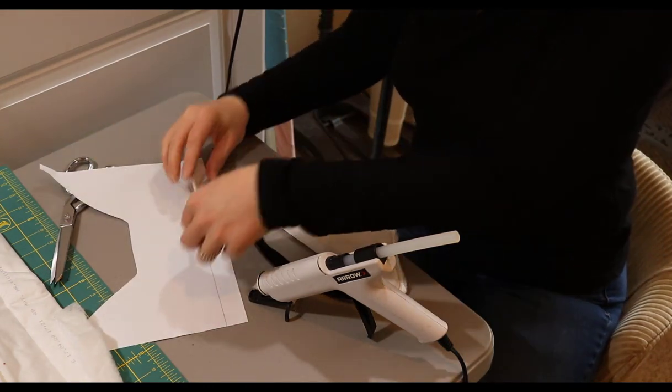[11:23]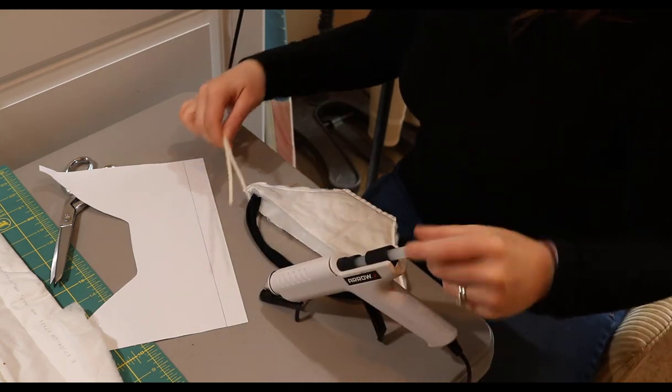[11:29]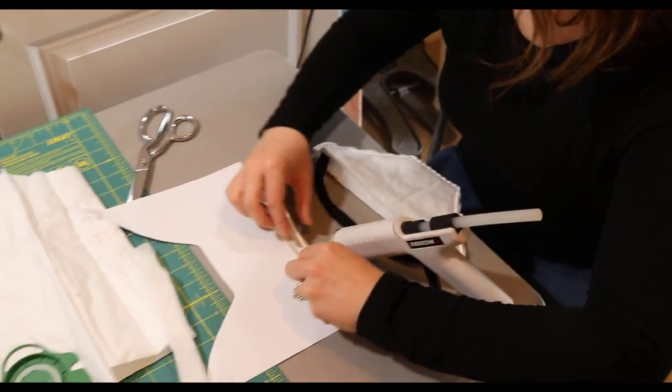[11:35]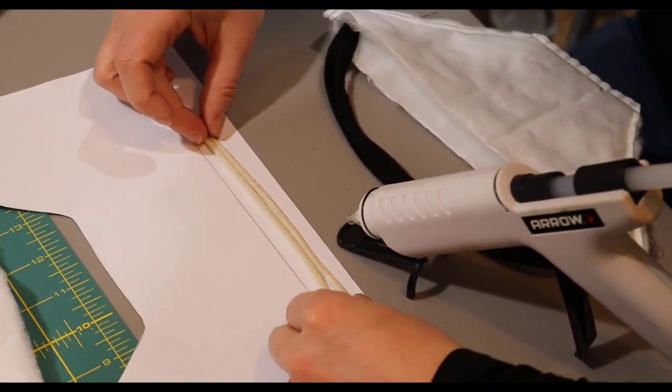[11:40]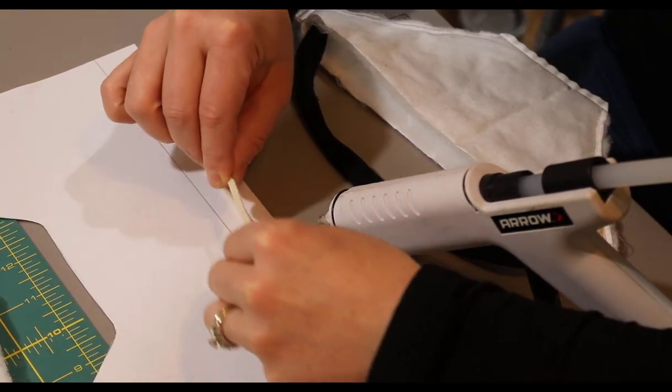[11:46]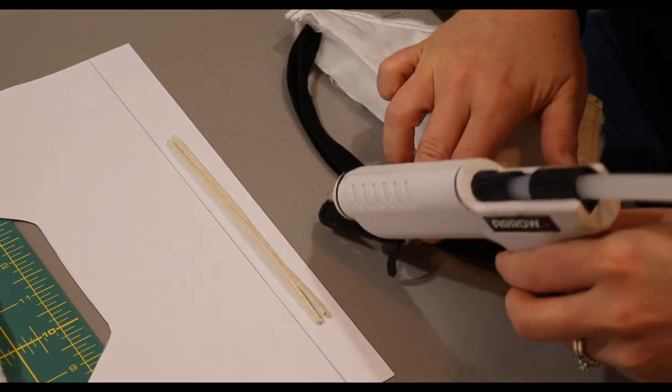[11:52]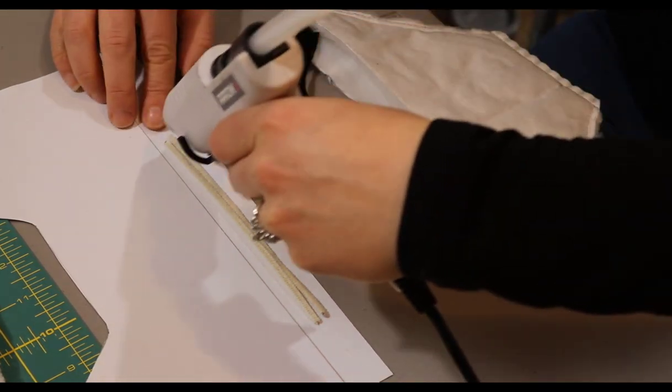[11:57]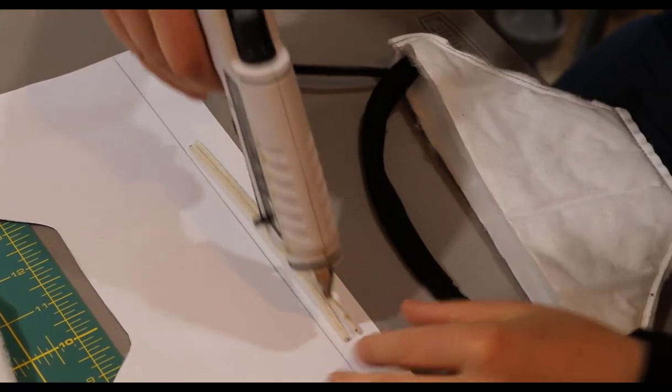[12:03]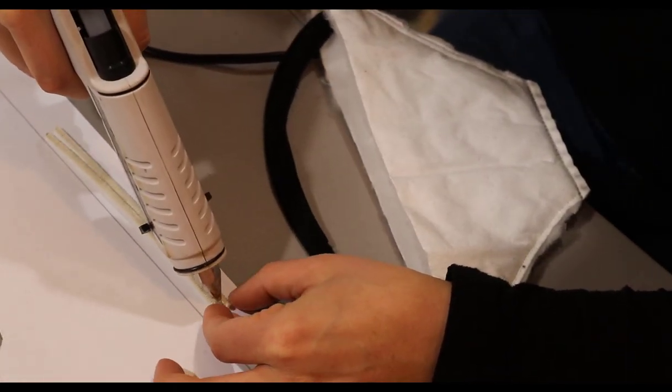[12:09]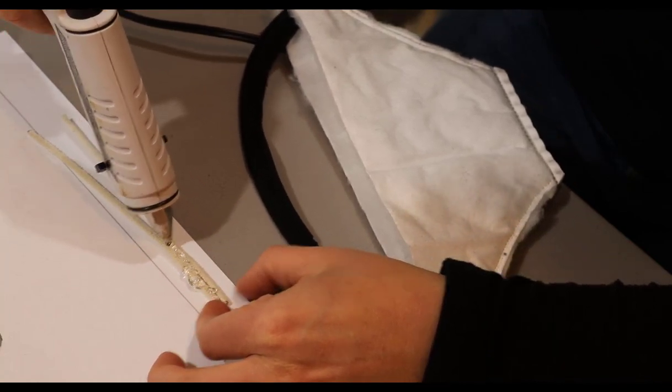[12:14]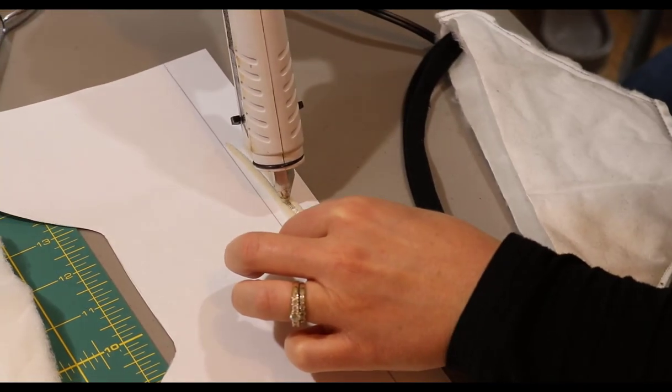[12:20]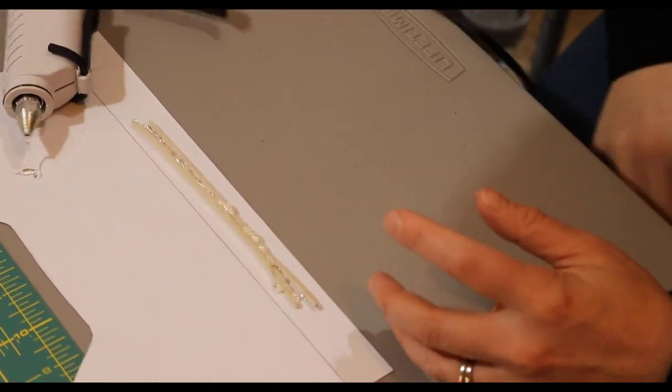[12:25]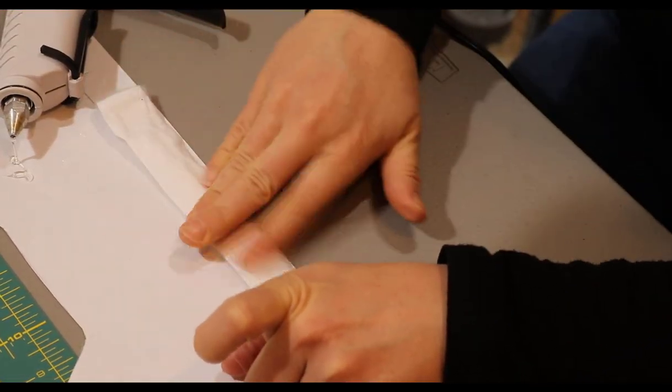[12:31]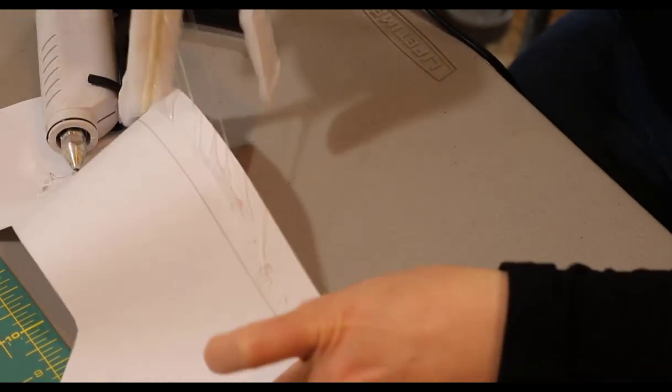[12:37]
So I have my glue gun here. It's starting to heat up. And I'm just going to use my leftover pattern piece underneath this. Try and make these as straight as possible. And then they have a little kink in them. There we go. Getting closer. Okay. So, I'm gonna try and put a little strip of glue. Try not to burn myself. Okay. Try not to glue it to the paper either.
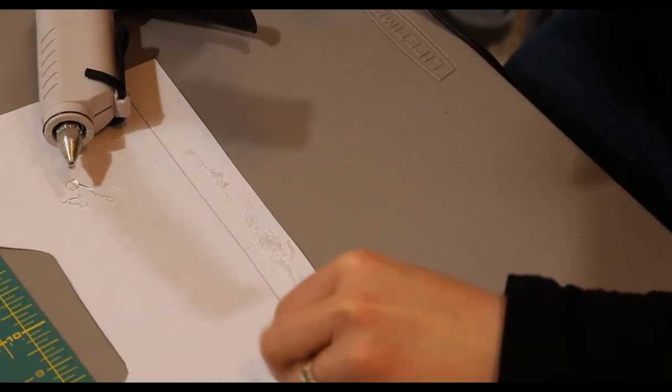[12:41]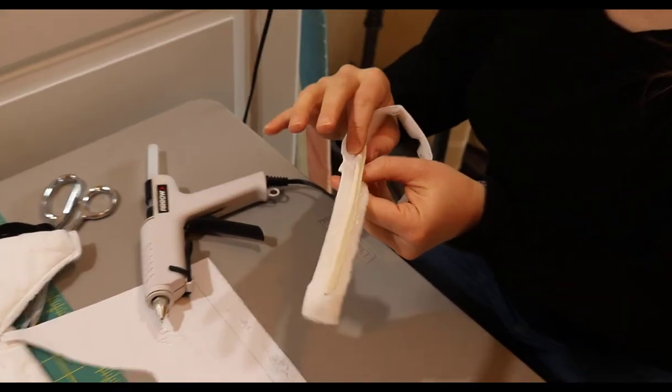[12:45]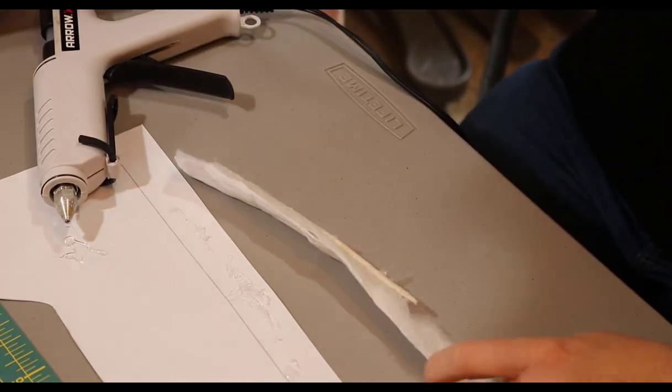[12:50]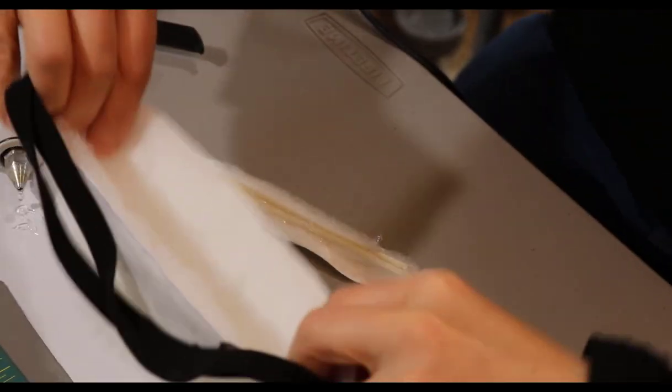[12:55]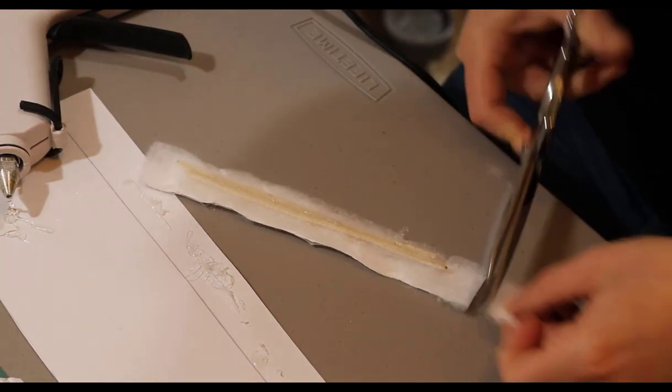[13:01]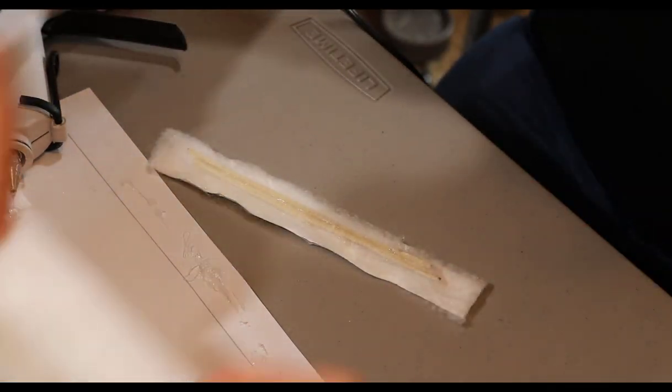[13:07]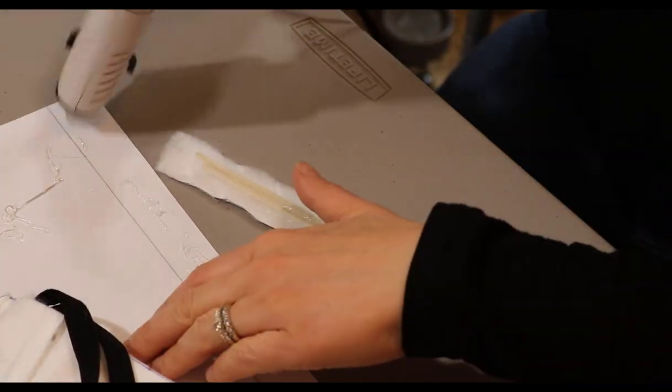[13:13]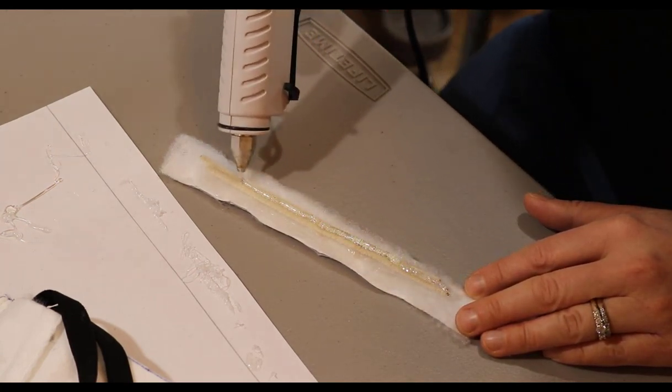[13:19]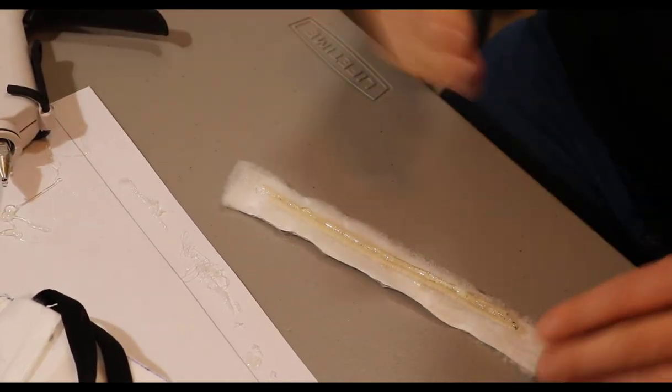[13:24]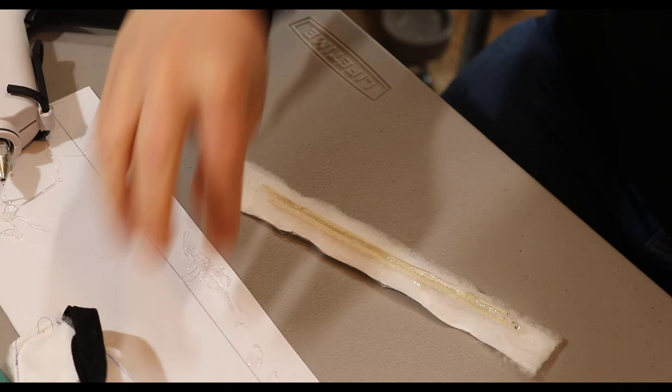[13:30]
Now that it's on there, I can trim this to length. And I'm going to set it inside. Trim this just a little bit more so it's even. So I'm going to put another layer of glue on here, and I'm just going to set it inside the mask. And you don't want to put it in there immediately because you don't want it to melt through everything, but just a second and it's probably plenty.
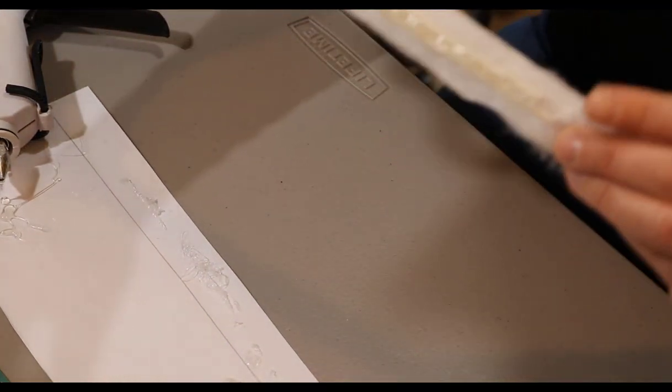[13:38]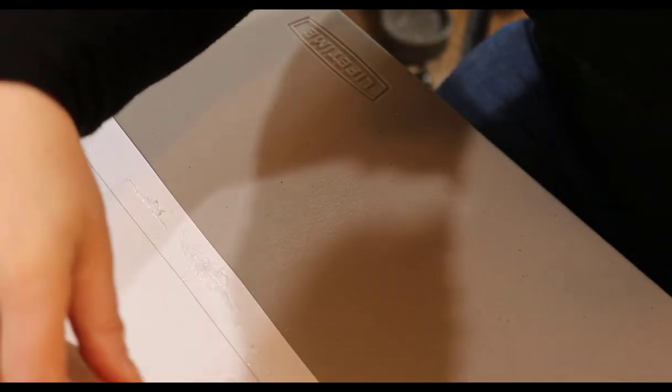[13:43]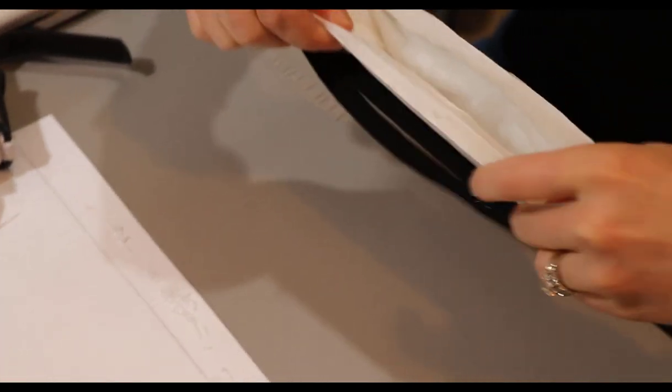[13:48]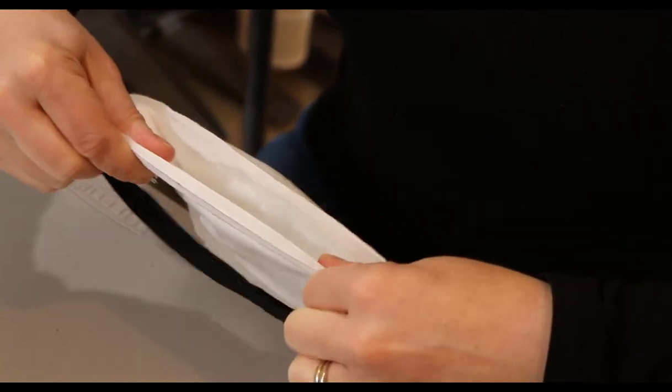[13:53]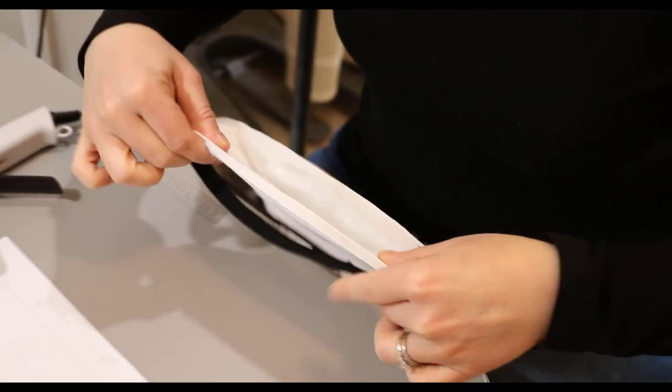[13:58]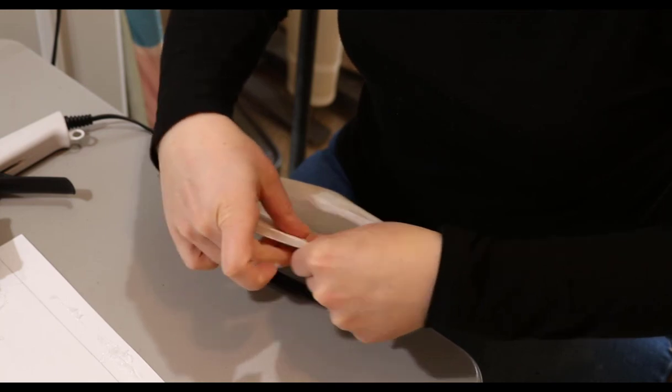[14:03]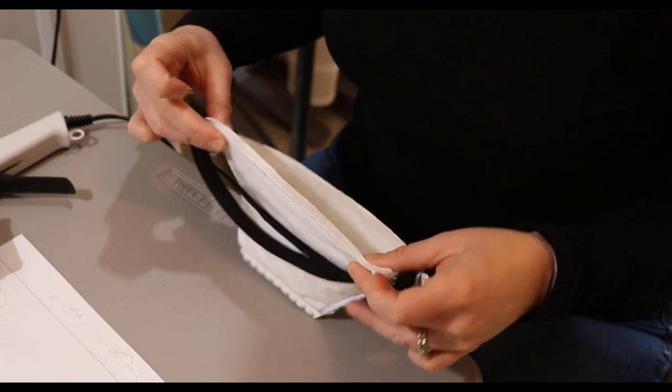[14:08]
Can you help me with that? Thank you. There we go. So don't bend it, don't try it on unless you're the one who needs to use this thing. But there, it's all encased and it's got that same soft fabric that would go up against your nose, and you can form it to fit your face.
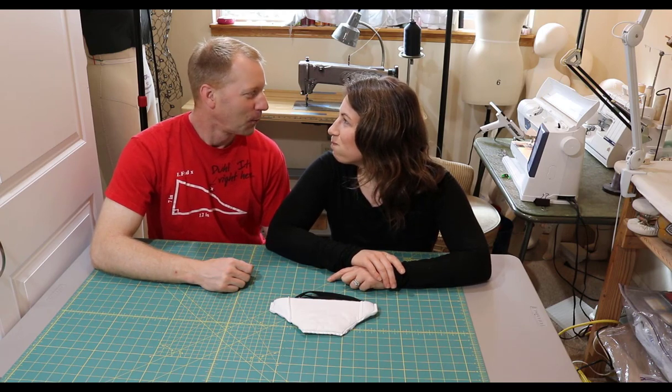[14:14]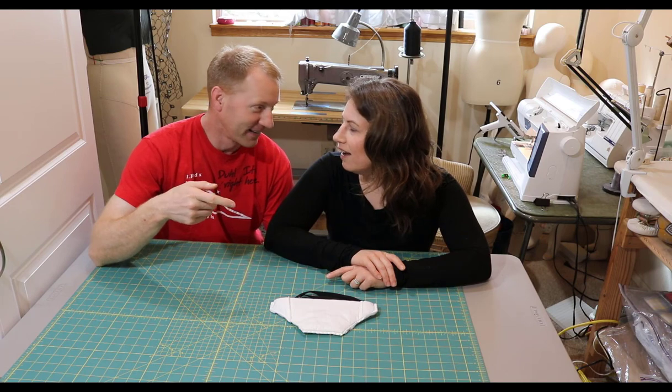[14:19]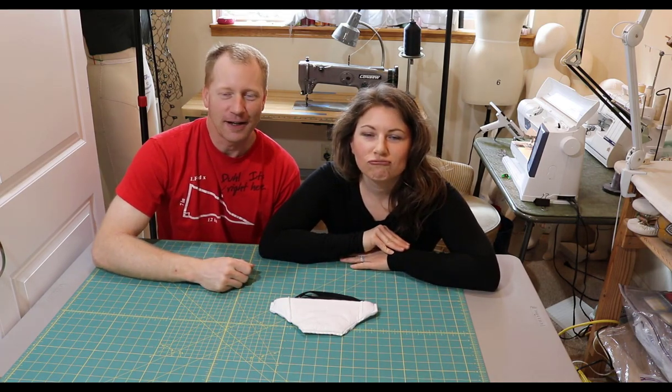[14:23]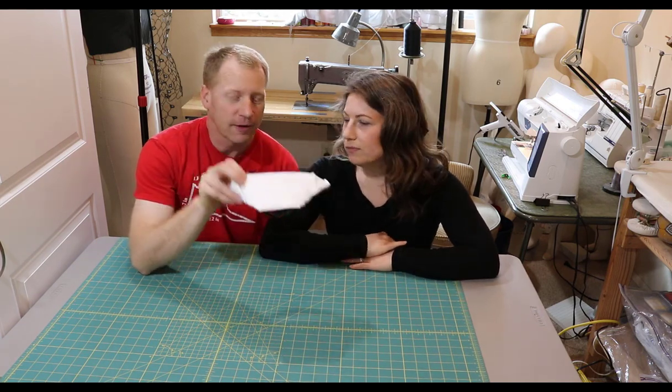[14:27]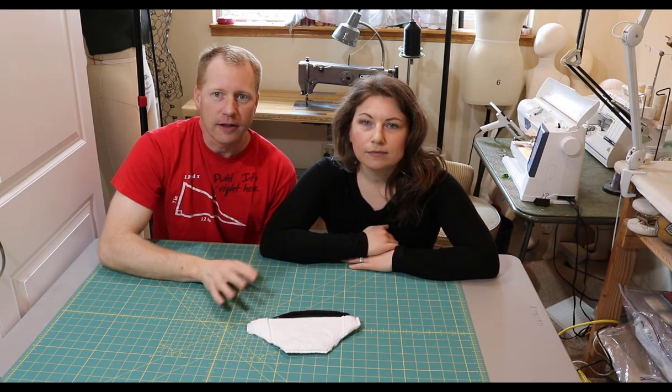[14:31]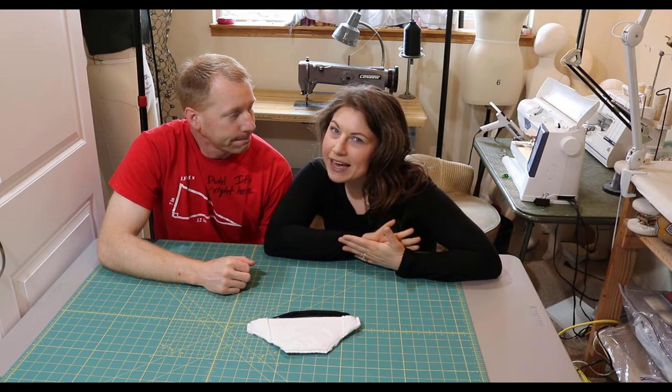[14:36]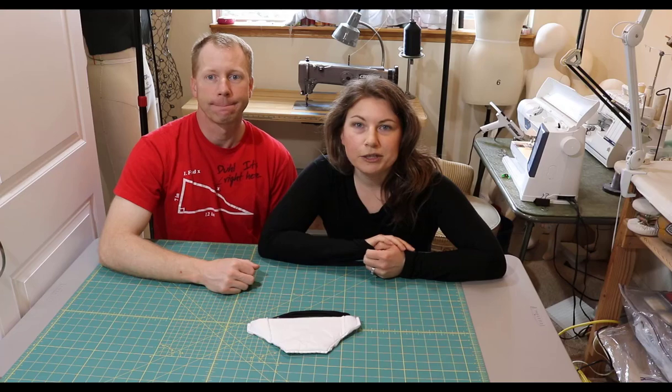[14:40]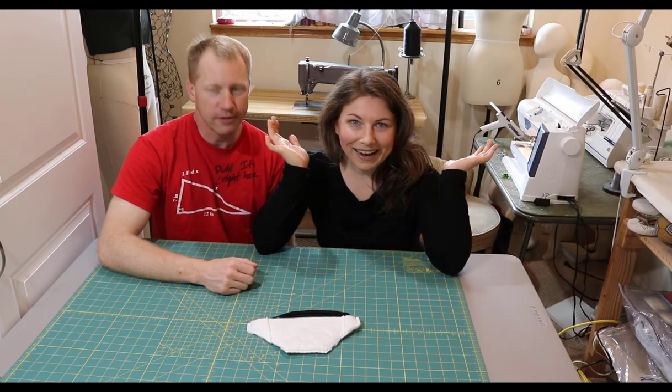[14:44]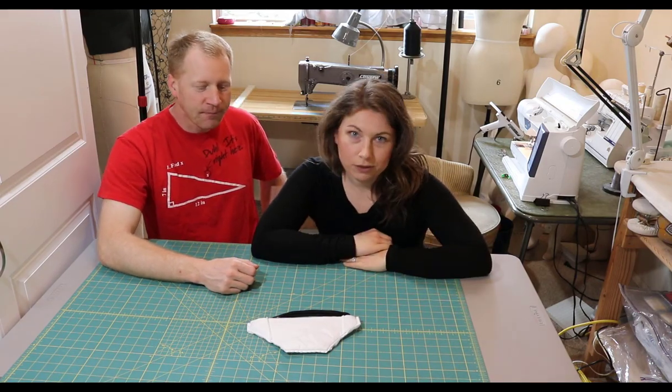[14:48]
So hopefully you find this informative. Hopefully these will help some people. It's just another take on a lot of different ideas on how to make these things. And there will maybe be a link coming out so you can download the 8.5 by 11 sheet of paper, print it out, and have your own pattern. Awesome. So you don't have to go out anywhere. Yeah, exactly. You can stay inside and do something.
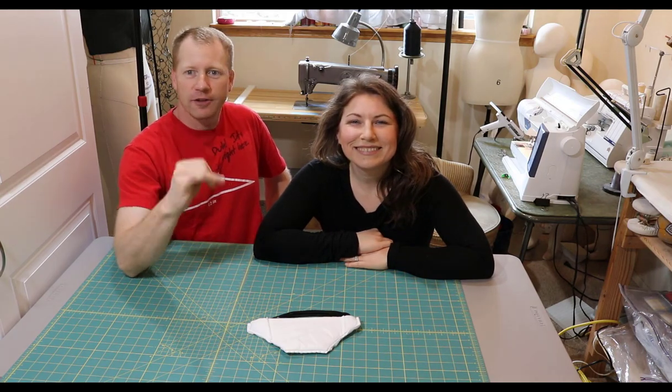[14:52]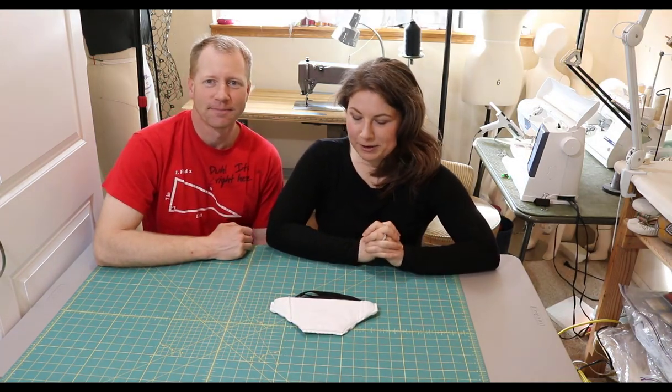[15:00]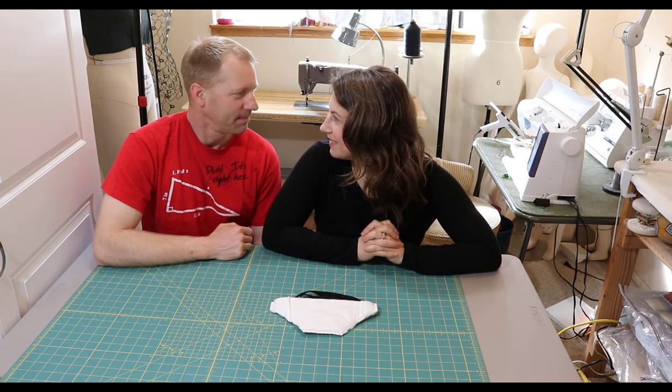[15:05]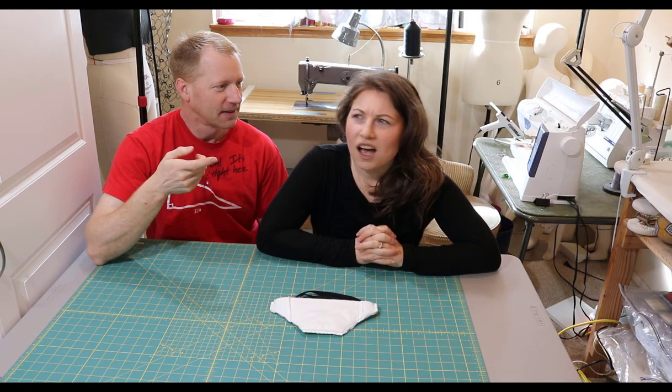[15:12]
Yeah. Or get in there and do something, or stay in there and do something. What? Wait. Oh, yeah. Our slogan doesn't work anymore.
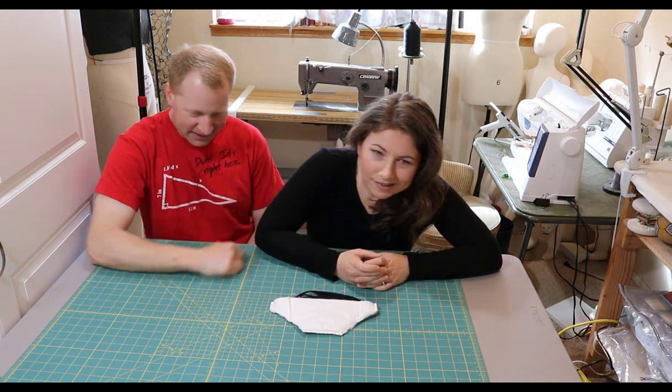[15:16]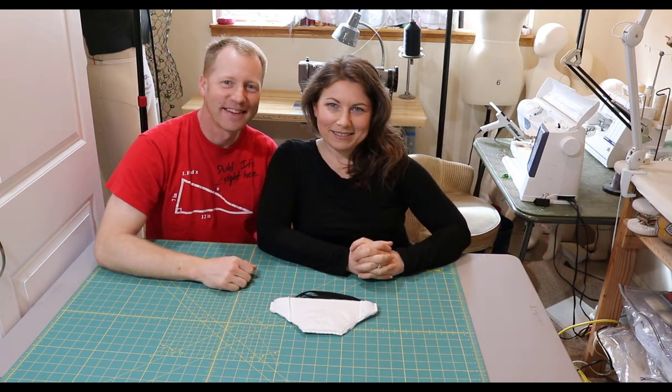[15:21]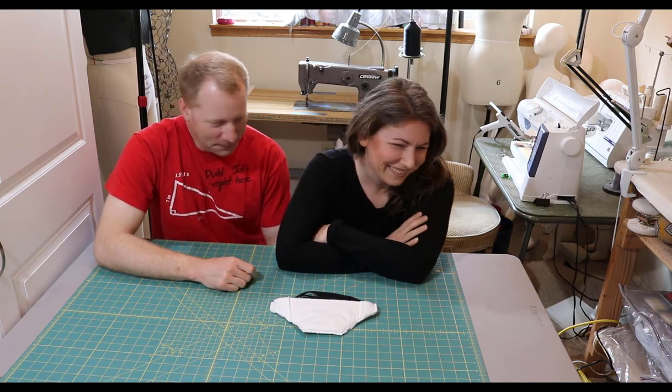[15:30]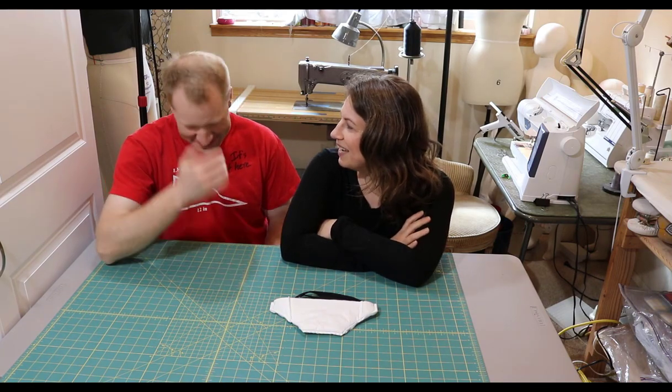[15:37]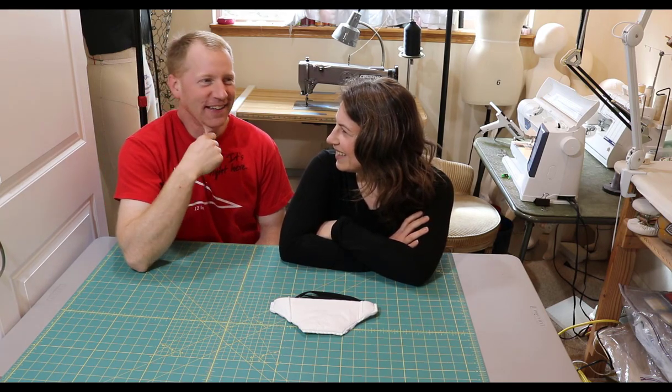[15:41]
Thanks for watching, Dan and Sarah Makers. We hope these videos inspire you to get back inside and do something. Exactly. Go ahead, try something. Outtakes. Awesome. Now try it one more time. Ready? We'll both say thanks for watching, Dan and Sarah Makers.
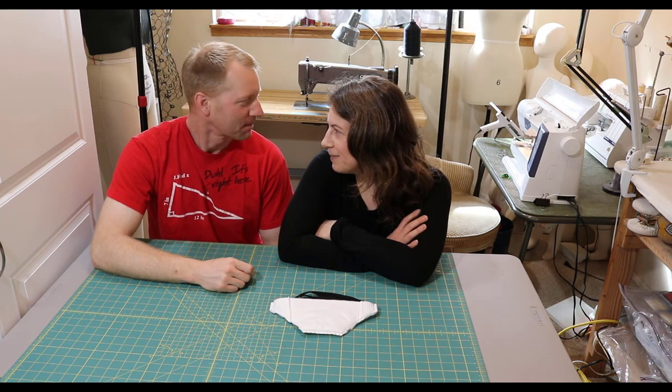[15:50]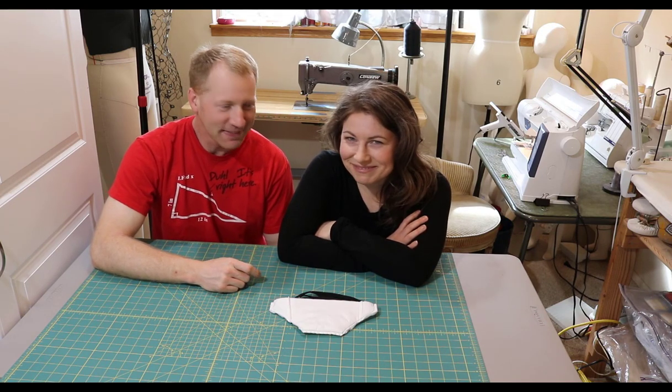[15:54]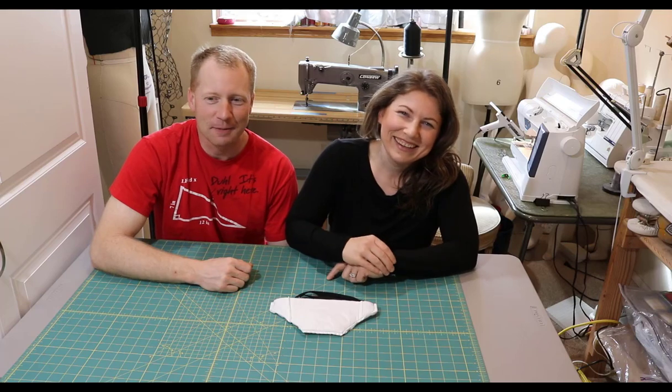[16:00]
Alright. Why do we get really goofy when we're doing these videos together? Because everybody does. Everybody gets self-conscious. Okay. Three.